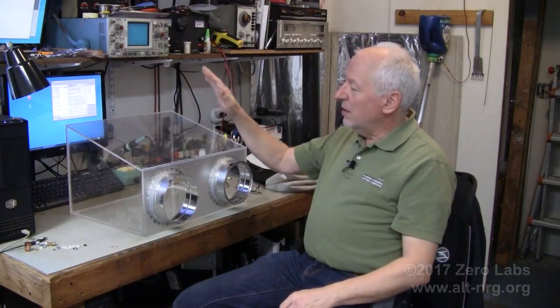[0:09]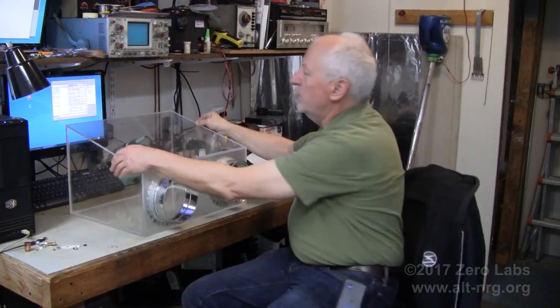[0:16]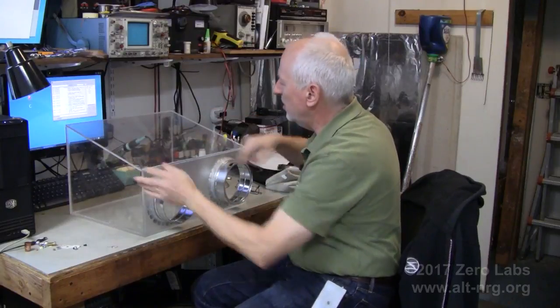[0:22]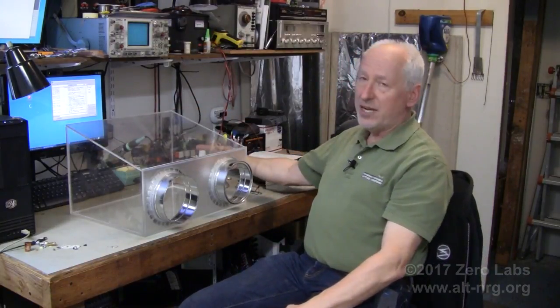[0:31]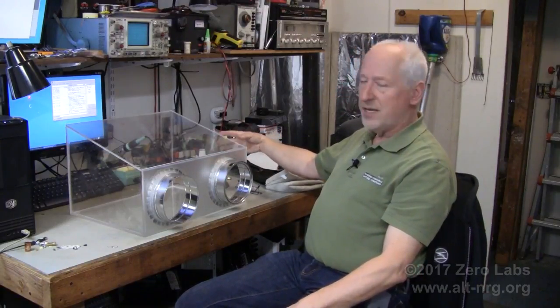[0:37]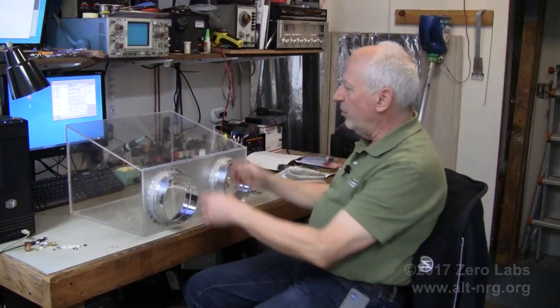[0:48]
The glove box is almost complete. All that's left really is to glue the top around the seams and cut out the access port on the top. I may also add a second access port on the side for a cylindrical sample entry where I can actually take it down with a vacuum and flood it with argon on smaller batches, so that I can introduce new samples to the glove box without having to completely purge all of the argon out of the box and start over again and waste a whole lot of argon, which is not that cheap.
So this is going to be more of a how-to video, how I went about constructing my glove box. This is by no means the definitive guide to making a glove box, but it's one way, and I want to present it to you now.
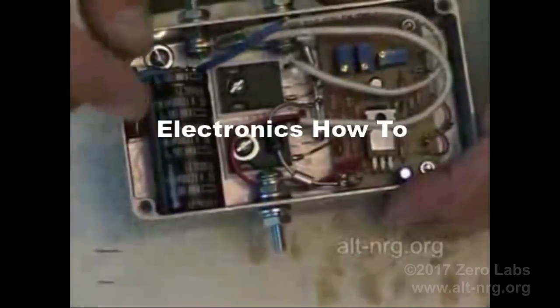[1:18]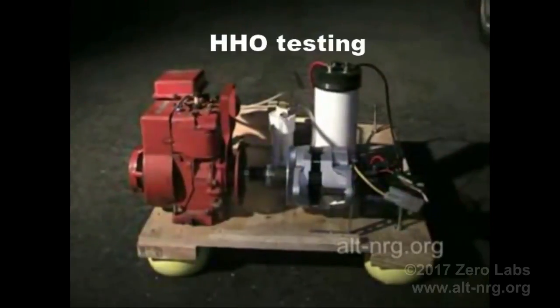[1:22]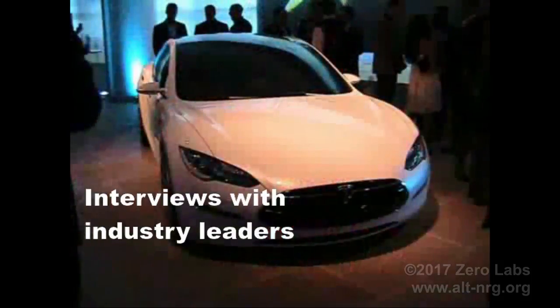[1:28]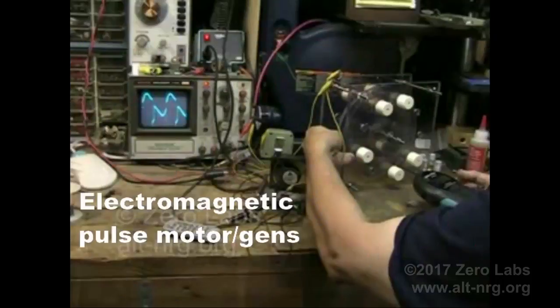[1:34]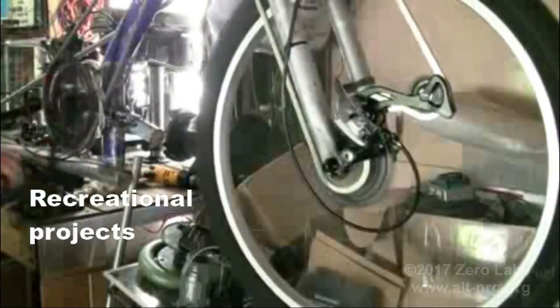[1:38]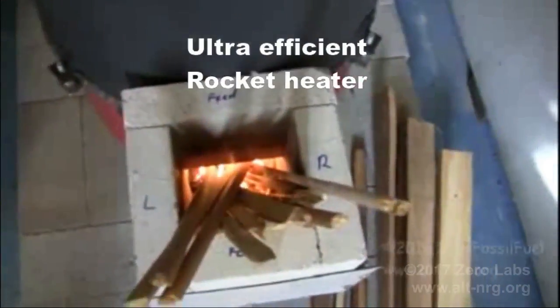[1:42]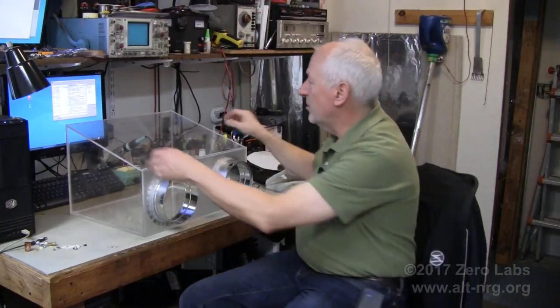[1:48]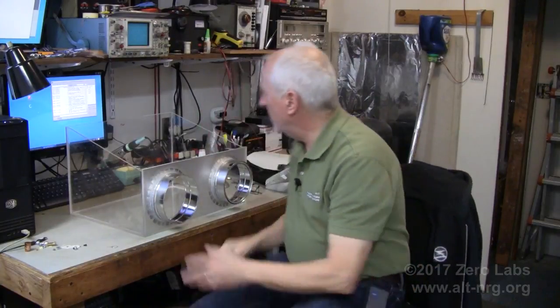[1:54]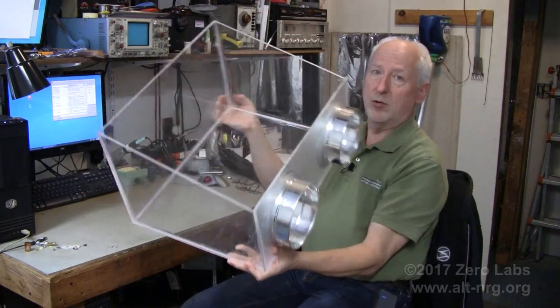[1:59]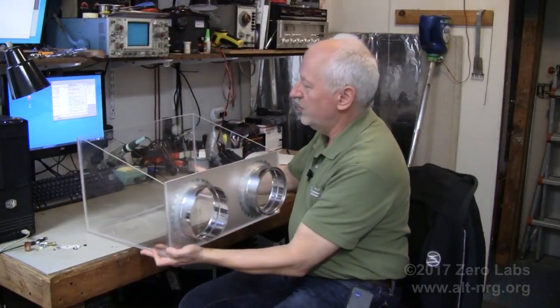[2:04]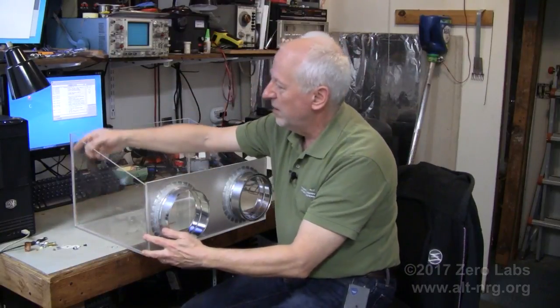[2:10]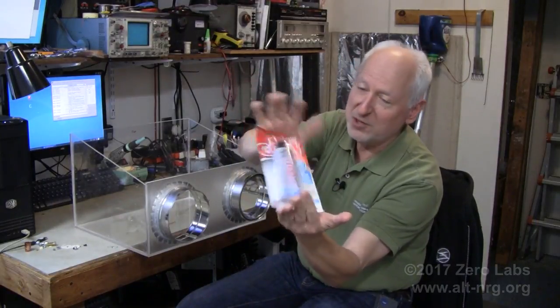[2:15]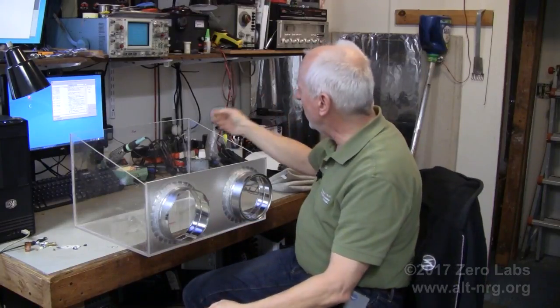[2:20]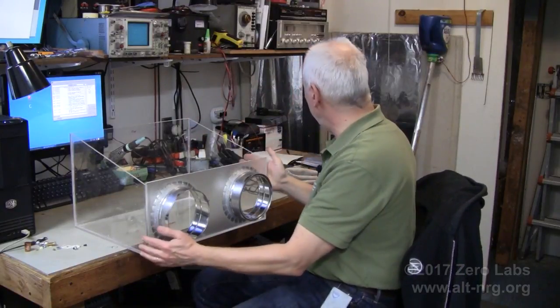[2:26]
So as I said, all that's really left now is to glue the top on. As you can see, the rest of the box holds itself together pretty well. All I've done is temporarily tape the seams around the edges and then run my bead of goop adhesive, the famous goop adhesive. It's my go-to adhesive, a very elasticized, rubberized type of adhesive to seal the corners. It's kind of like an aquarium tank.
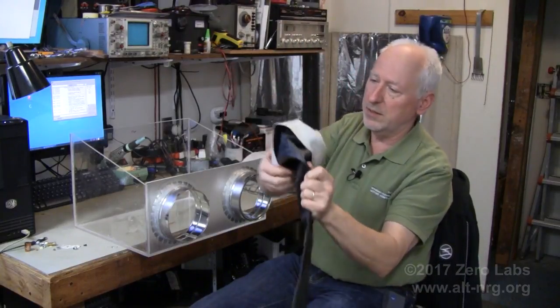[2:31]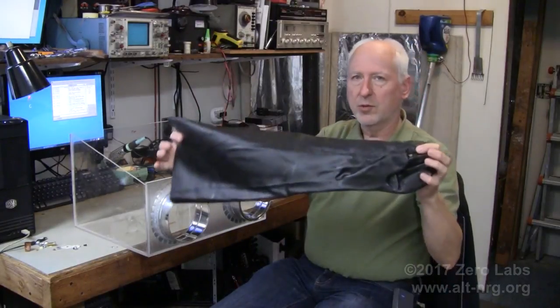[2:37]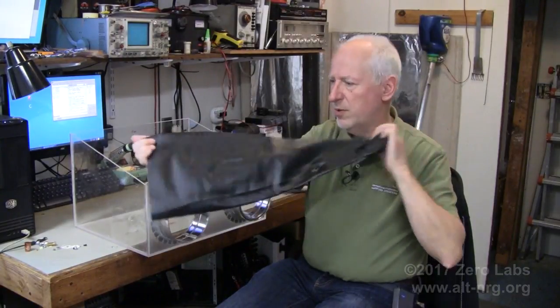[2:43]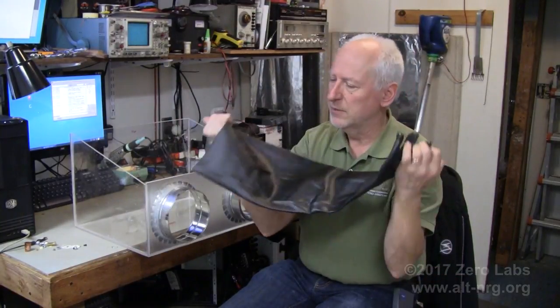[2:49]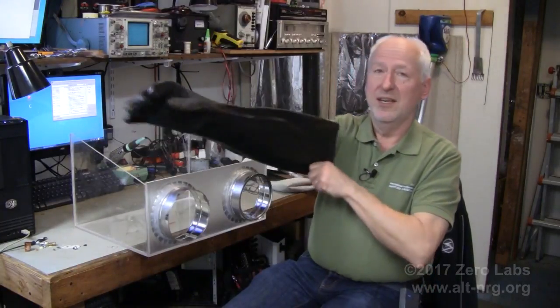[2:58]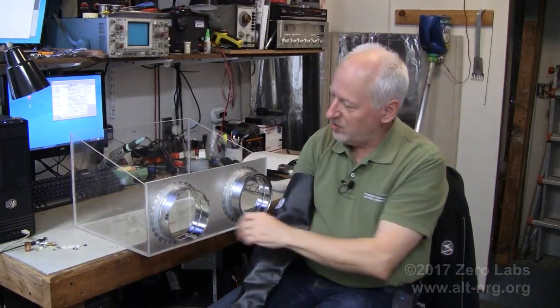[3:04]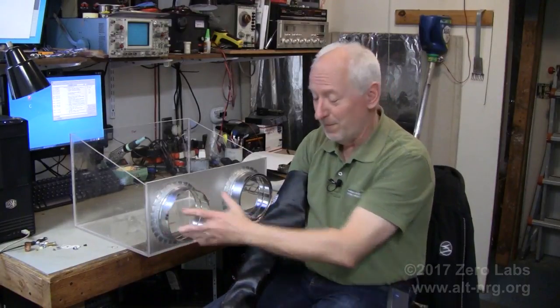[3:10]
And then I also have these 26-inch long gauntlets. These are rubberized gloves that are sold for the purpose of trapping beaver, muskrat, waterfowl, and the like. For hunting, you normally pay about $35 for a pair of these. I found a set on eBay for $18. These things are awesome, and they are the exact right size. They're insulated, full length, and the opening at the top is just the right size for the opening on the port entry for the glove box. So let's put it together.
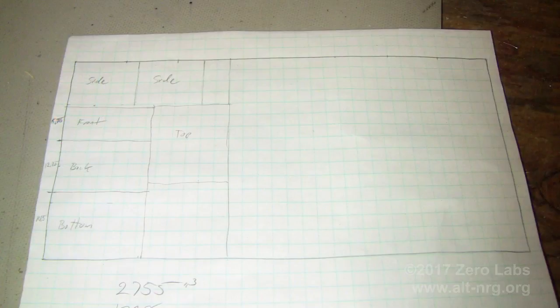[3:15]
The first step in the process, of course, is to decide how big your box is going to be, and then you need to calculate the size of the pieces that you want to cut from the master sheet of plexiglass that you have on hand. Fortunately, I was able to salvage a couple of full 4x8 foot sheets of plexiglass from a studio remodel at our television studio that was being thrown away, so I got quite a bit of plexiglass to work with, which was kind of nice.
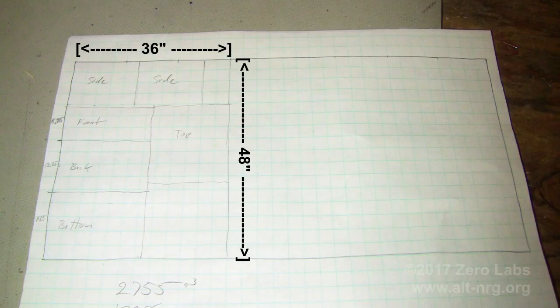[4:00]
So you can see from this diagram that I've laid out my pieces in such a way as to minimize the amount of waste. The total amount of plexiglass that I ended up using for this project is the 4 foot width of the raw piece and 36 inches. So the piece that I cut out of the 4x8 sheet is 4 feet by 3 feet.
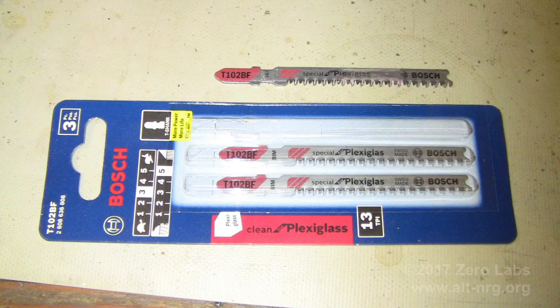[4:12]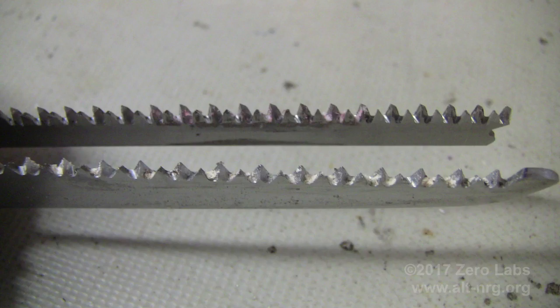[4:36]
Next, we actually need to cut the pieces. To do this, I purchased some specialty purpose blades exactly for the job, as suggested to me by one of my nerd herd, and these blades worked out remarkably well. These were purchased at Home Depot for I think about $6 for the set of three, and in this close-up picture you can see that the blade very closely resembles another blade that I recognized right away: the lower blade is the saw blade of my Swiss Army knife. The way the grooves are cut through, it was just amazing how well it cut.
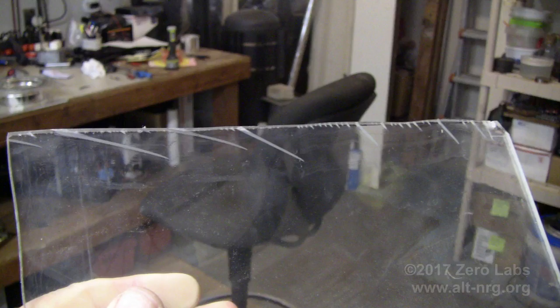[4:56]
Now, because the sheet was so large, I couldn't work with it on my bench. I actually had to lay it on the floor. But in order to give my jigsaw clearance away from the floor, I had to put some 2x4s on edge underneath the 4x8 sheet of plexiglass in order to make the cut.
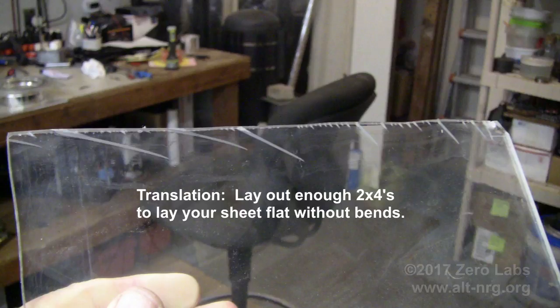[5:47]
This picture here shows the result of my first cut with just one 2x4 and the plexiglass sheet sort of draped over it, because it just made a bulge in the middle next to the line where I made my cut. And as I made my cut across the sheet of plexiglass, you'll see that the bend got tighter and tighter because the amount of plexiglass was thinner and thinner as I was cutting through the piece. And as the bend got tighter and tighter, you started to create these stress fractures that you see in the edge. Fortunately, this was on a waste piece of plexiglass, so I was able to cut that out and not use it.
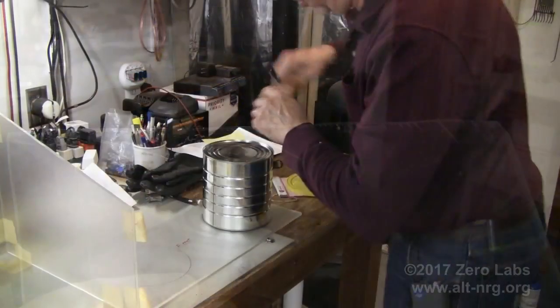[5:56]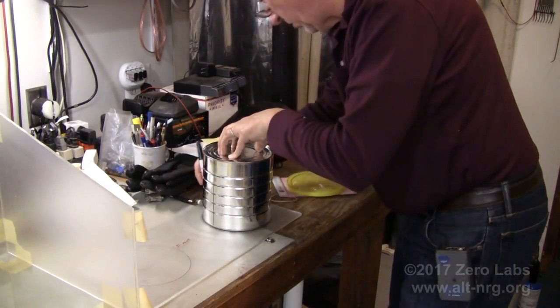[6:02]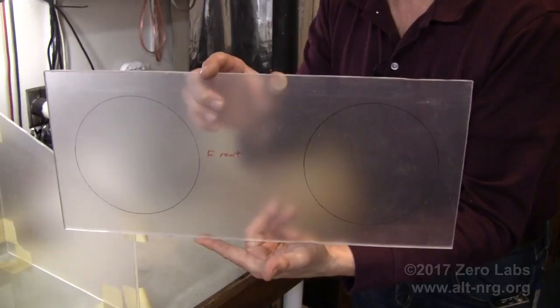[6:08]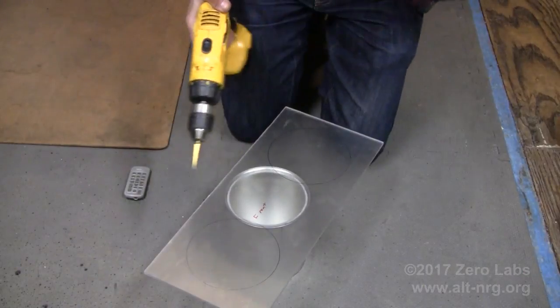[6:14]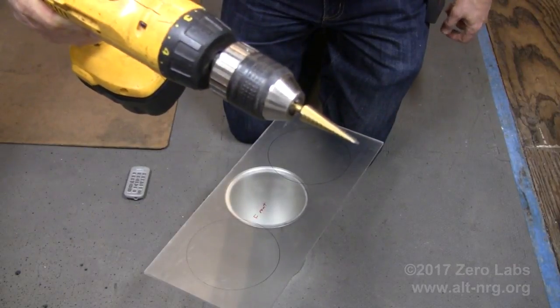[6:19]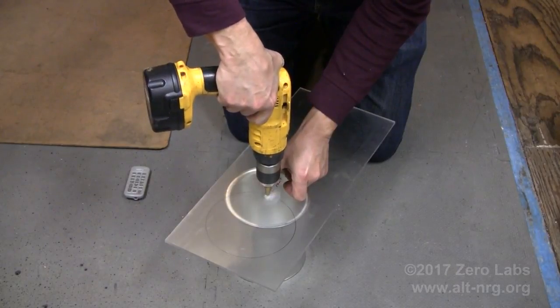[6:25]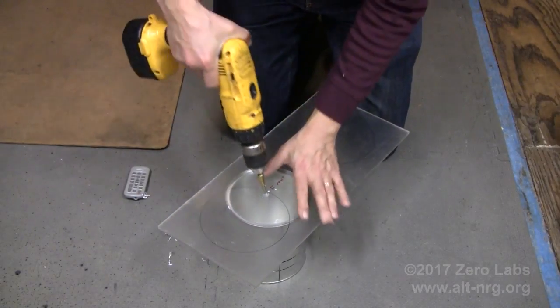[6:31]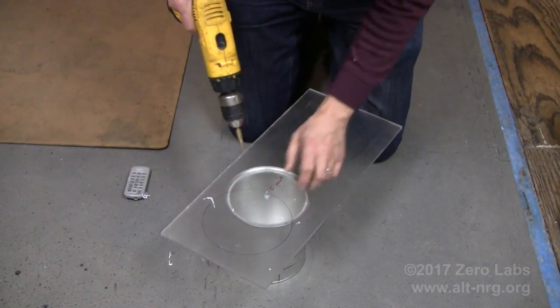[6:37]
Here I'm using the coffee can to draw the circles on the front panel where I'll be cutting the openings for the coffee can when I cut it in half to create the entry ports. The best way to make the starter holes in the front panel for the circular ports is to use this stepped drill bit. In fact, using a stepped drill bit is the best type of drill to use for any type of hole drilling in plexiglass. It makes a very clean hole so that you can insert the blade for the jigsaw and then start and finish your cut at the edge of that hole that you've drilled in the plexiglass.
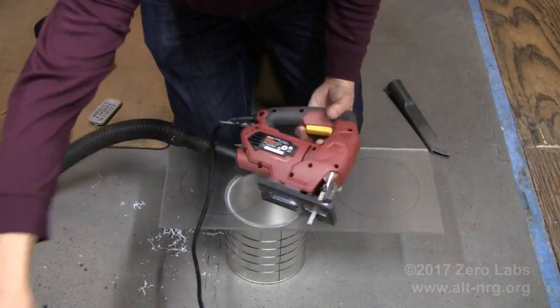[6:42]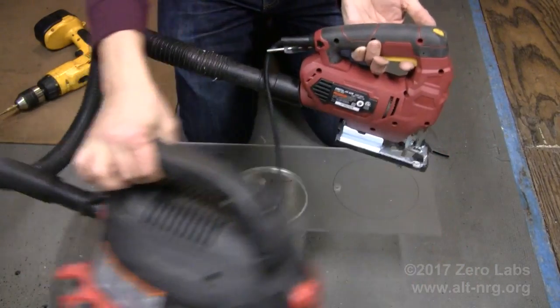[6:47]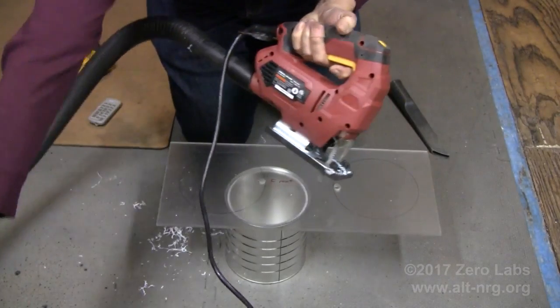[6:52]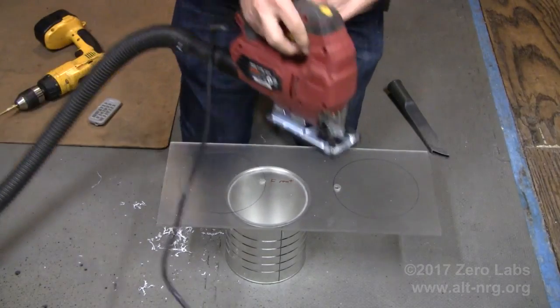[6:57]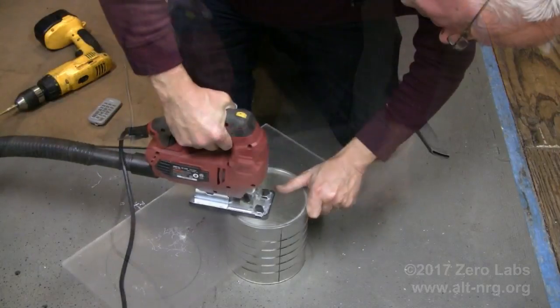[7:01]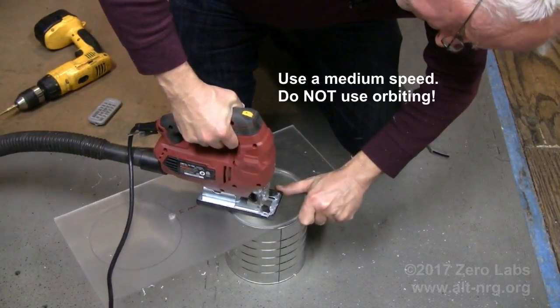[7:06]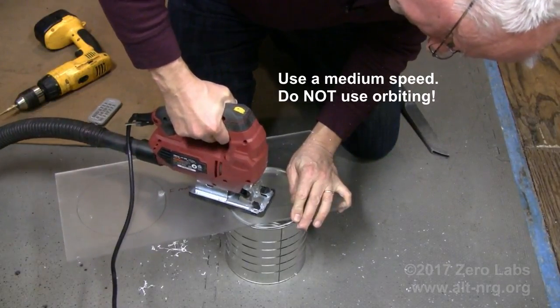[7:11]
Next, I cut the holes for the port entries. To do that, I've attached my little portable wet dry vac, and the wet dry vac attaches to the saber saw, blowing out rather than sucking in. I found that sucking in did not retrieve the large chips of plexiglass that came off the blade, and blowing out against the blade also helps to keep the blade cool when you're making the cuts going around the circle.
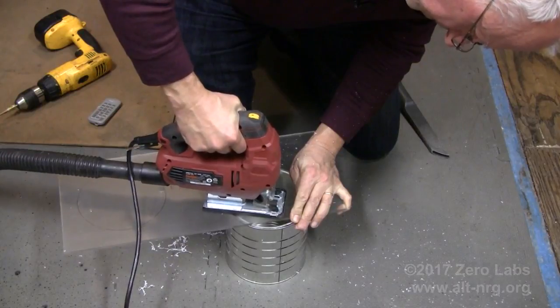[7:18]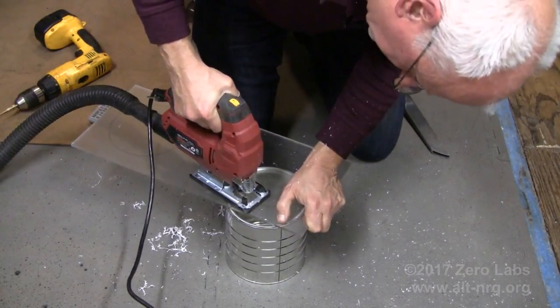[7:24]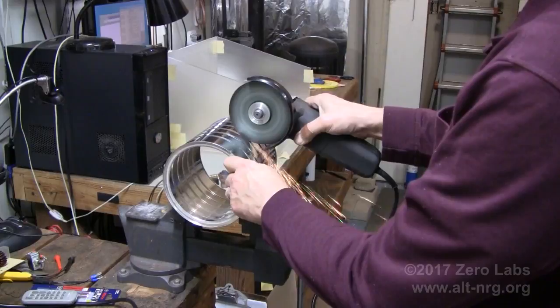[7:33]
The blade also tends to get hotter when you're trying to make a corner, because of the friction of the blade against the side of the opening as you're going around. A straight cut normally creates a channel that's just a little bit wider than the blade, so you don't get as much friction. To split the coffee can in two sections, I'm using a cutting wheel in my angle grinder
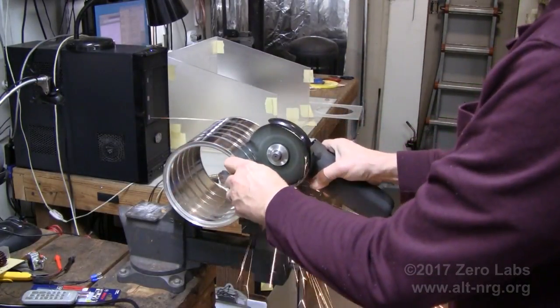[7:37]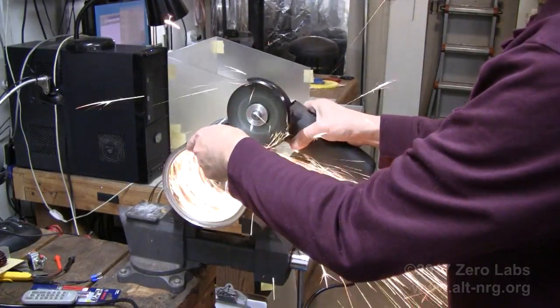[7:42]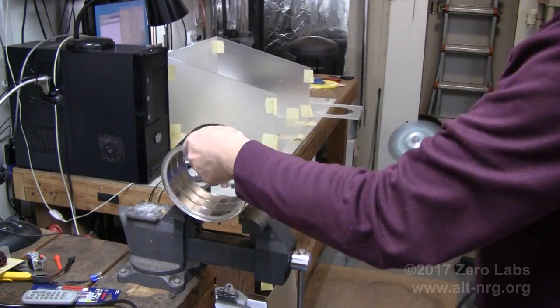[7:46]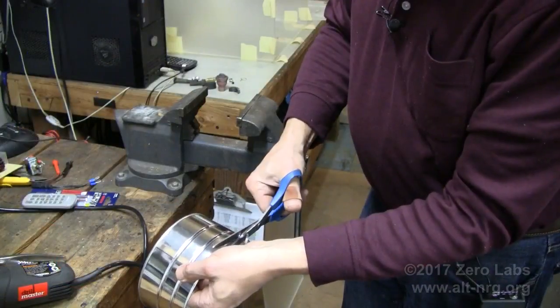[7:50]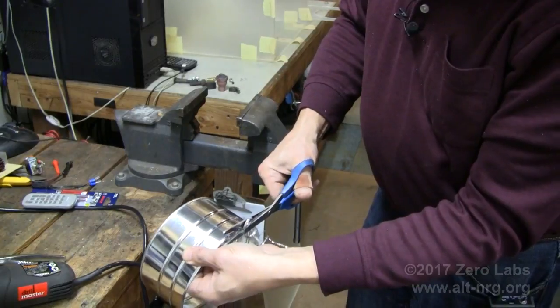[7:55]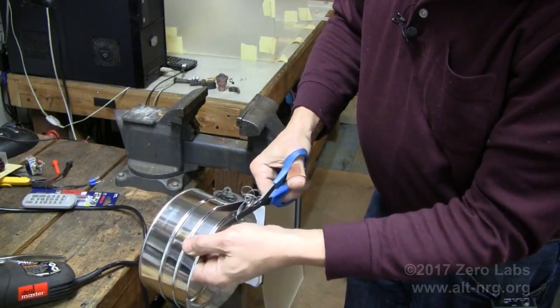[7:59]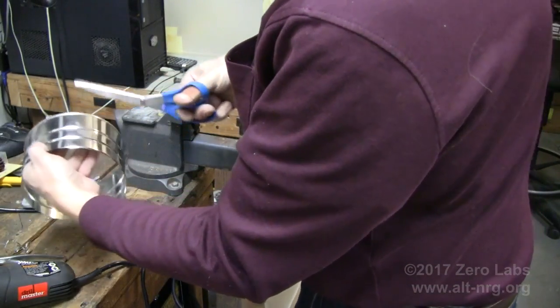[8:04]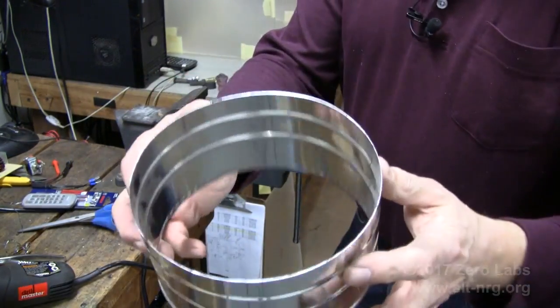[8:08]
and support it in the bench vise almost wide open so that it doesn't roll around as I'm making the cut. Once the cut is complete and I have the two pieces, I simply trim the edges to get rid of all of the sharp burrs. I tried using tin snips, but I found that it's just easier to use a pair of regular scissors, because the gauge of the metal is so thin that it just cuts like butter with the scissors and produces a very, very clean edge.
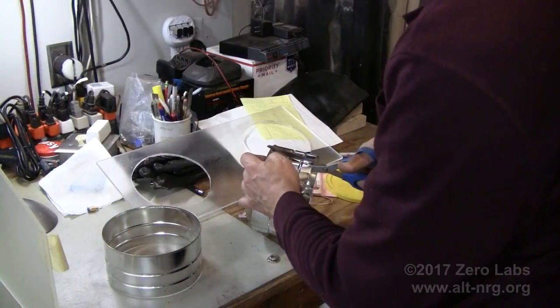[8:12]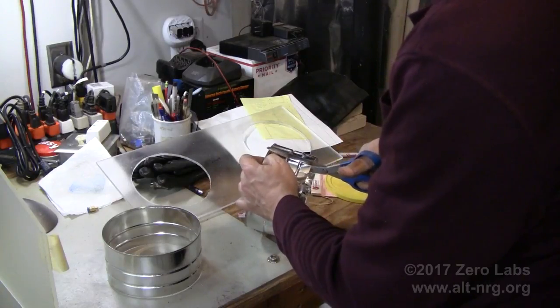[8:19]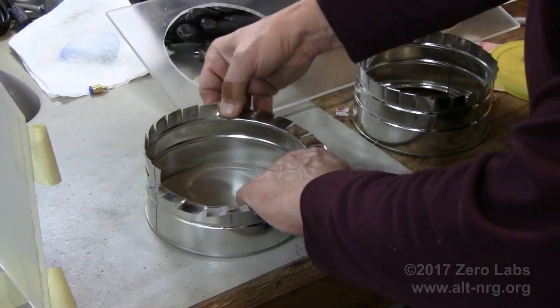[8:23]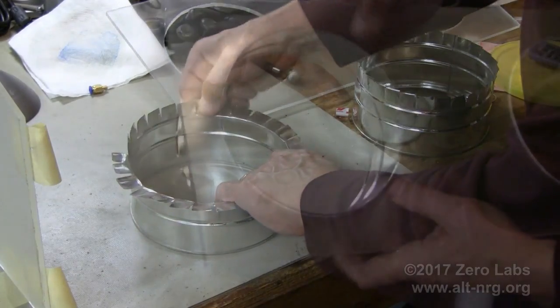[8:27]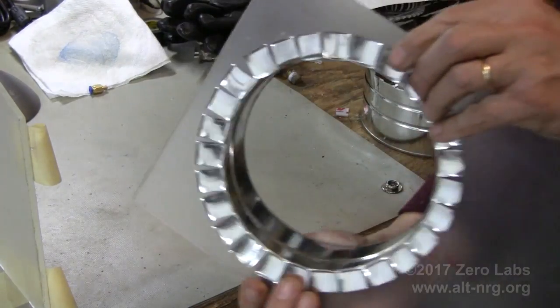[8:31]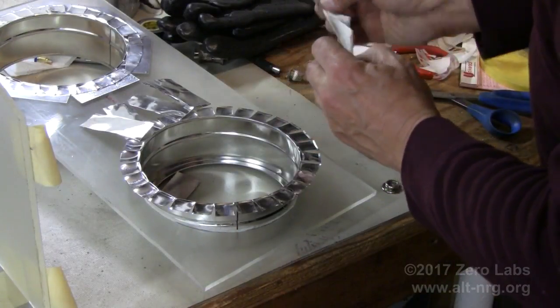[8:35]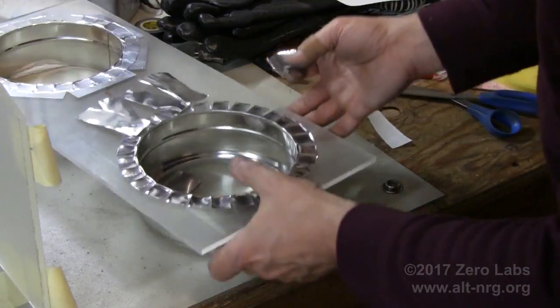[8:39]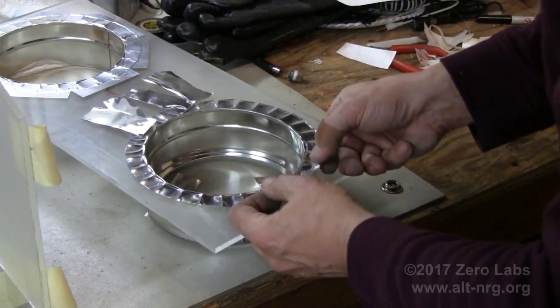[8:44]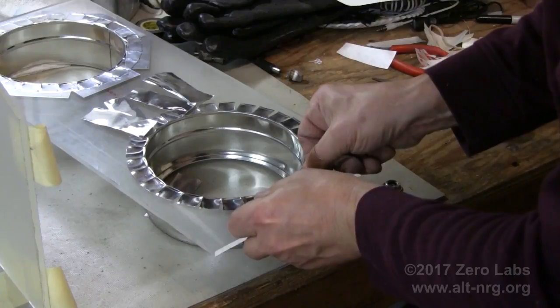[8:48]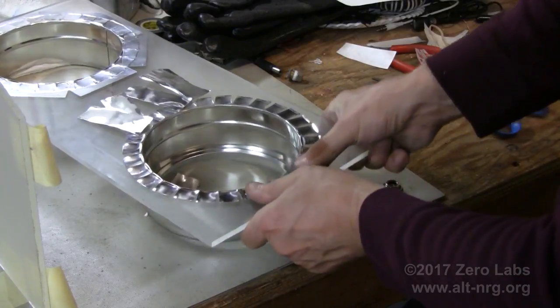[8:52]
Next, I cut 3/4-inch wide tabs in the sharp edge of the two ports and bend them over so that I can insert them through the port openings that I cut in the front plate, and it rests nicely and gives me something to secure to the back side of the front plate. Then I tape the tabs to the back side of the panel using this aluminum tape. I actually overdid it, because in the end I ended up taking the aluminum tape off again and just smearing more of the adhesive sealant all the way around the edge where the tabs are on the back, as well as the corner at the front.
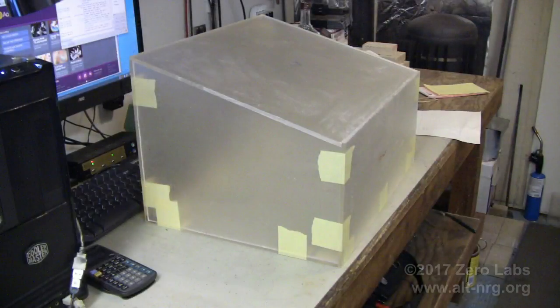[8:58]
In this picture here, you can see how I've test fit all of my pieces together simply by assembling them at the corners with some 2-inch wide masking tape. And then I've sanded the edges and just got everything perfect before I went on to the next step.
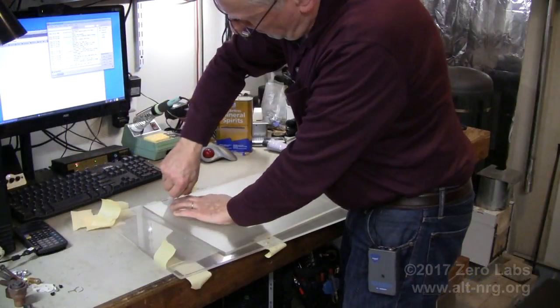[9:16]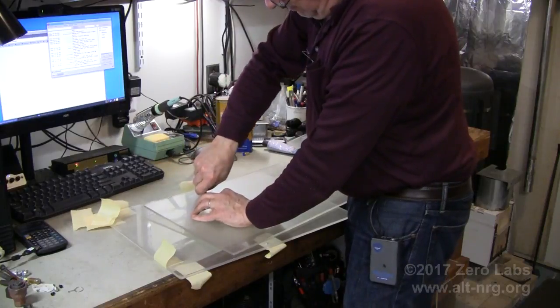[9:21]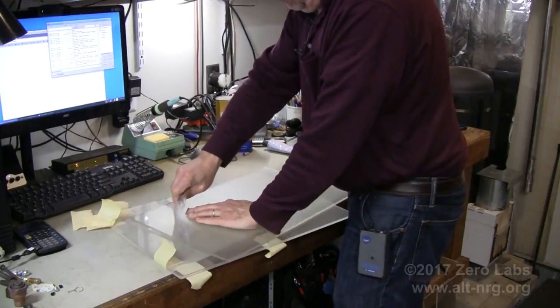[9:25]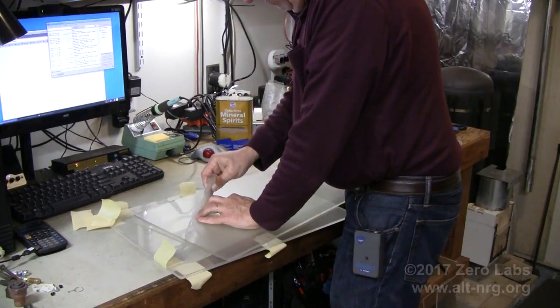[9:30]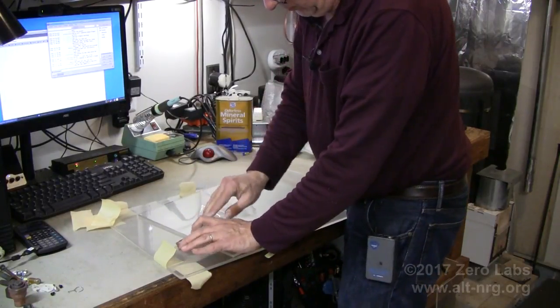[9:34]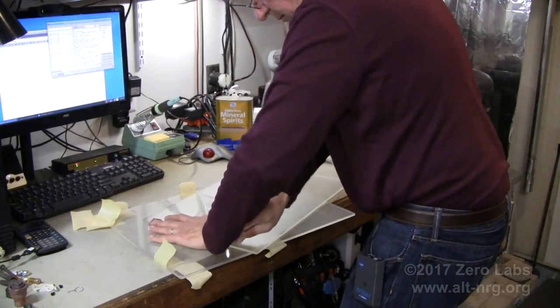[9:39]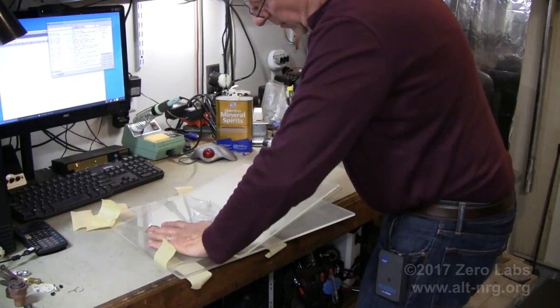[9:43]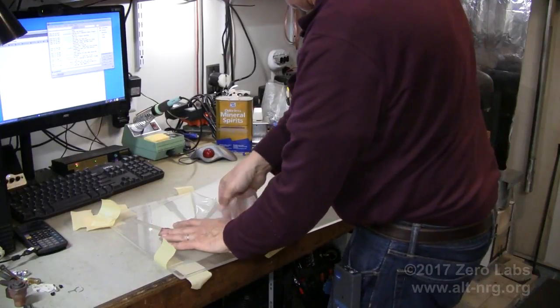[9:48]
Here I'm removing one of the protective film layers that is affixed to the plexiglass. These plexiglass panels had, let me see, 1, 2, 3, 4 layers of protective film. And one of them was smoke colored, the other was clear, and then on the other side there were 2 clear layers. Some of them did not come apart very, very easily, and
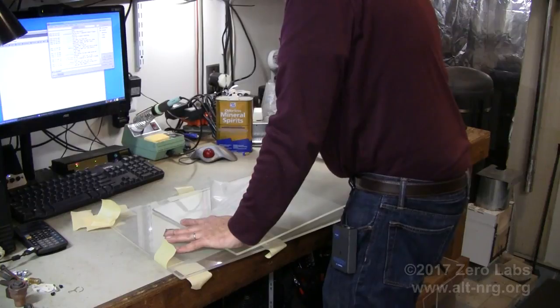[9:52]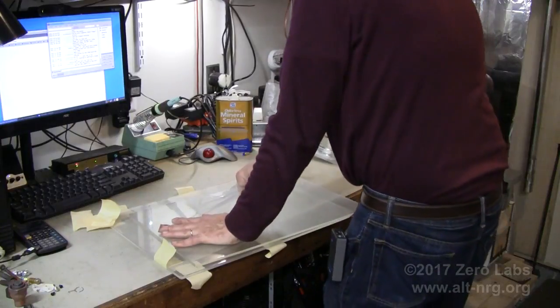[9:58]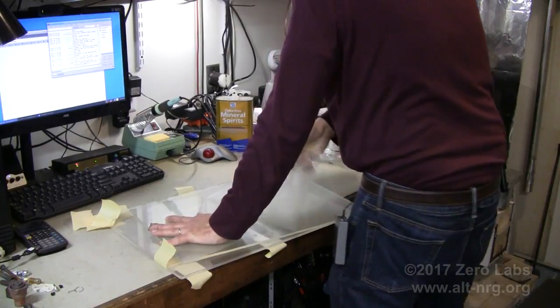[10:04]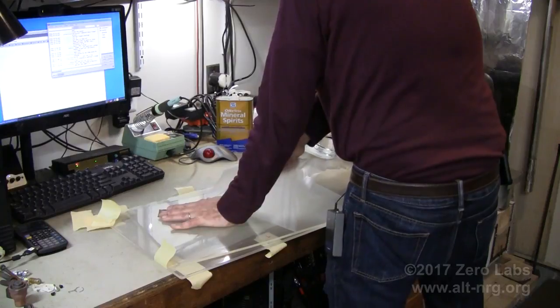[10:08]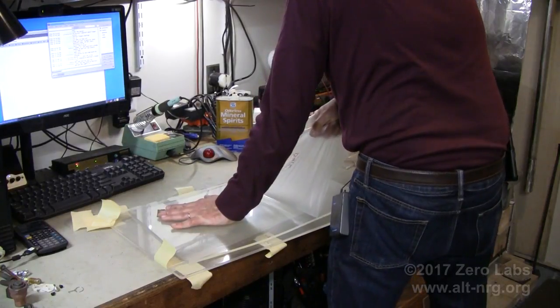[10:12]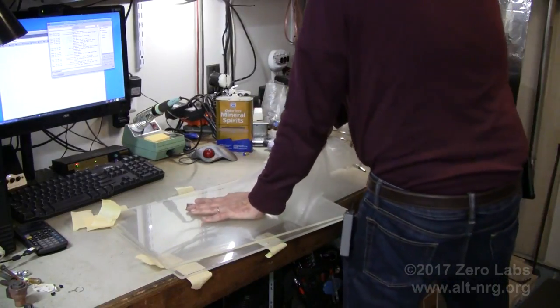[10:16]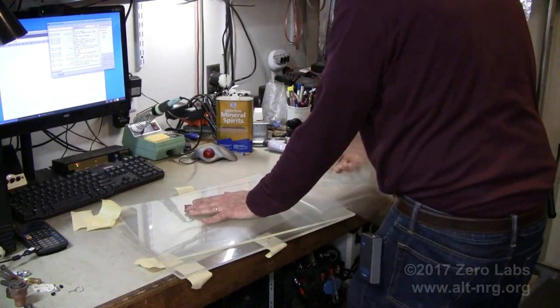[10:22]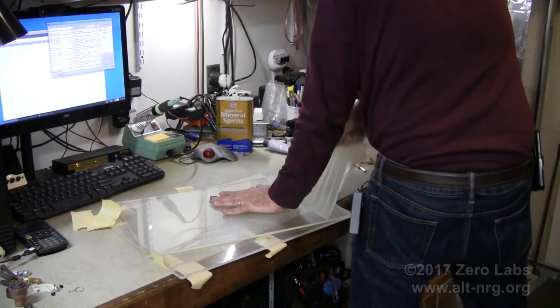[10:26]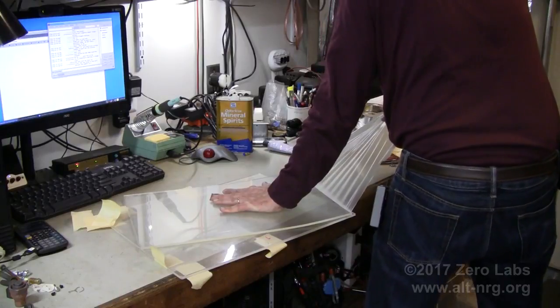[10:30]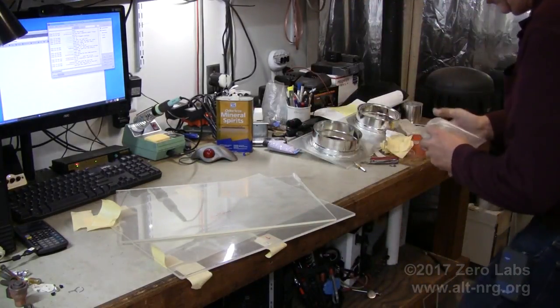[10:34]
left an adhesive residue behind that I first tried to remove with chemical solvent like Goo Gone or mineral spirits. That was a bad idea. All it did really was smear it and made it even more difficult. In the end, I ended up using the 2-inch wide masking tape and just sticking it back down to the adhesive that was left behind, and using it like those strips that women use when they're waxing. You apply it down and you just tear it off, and it just pulls everything that's underneath with it. You do that a few times to the adhesive against the plexiglass, and it comes very, very clean. It really does work very well.
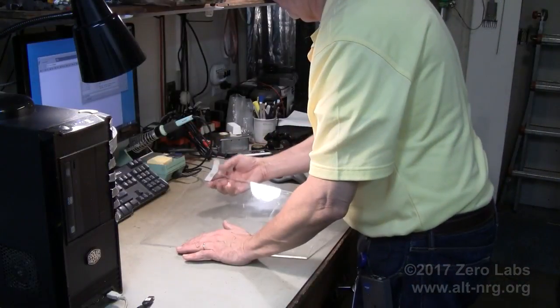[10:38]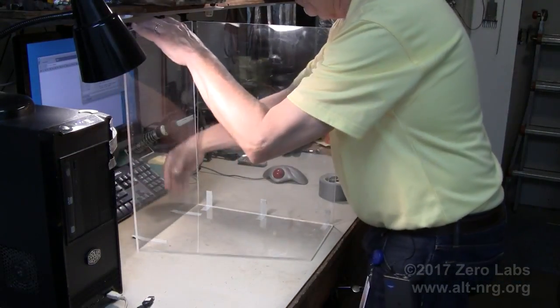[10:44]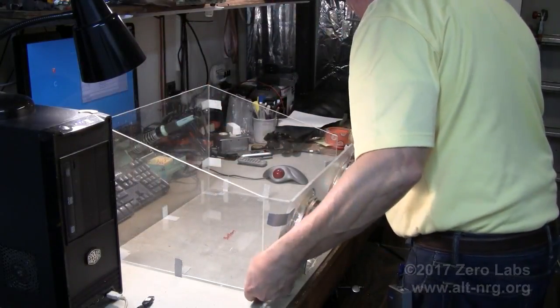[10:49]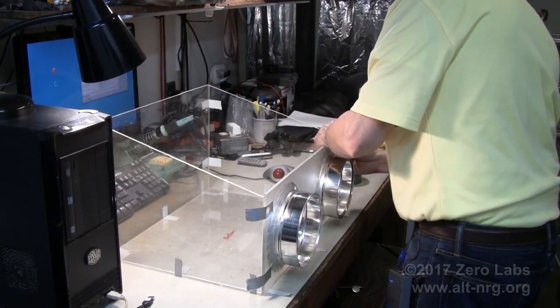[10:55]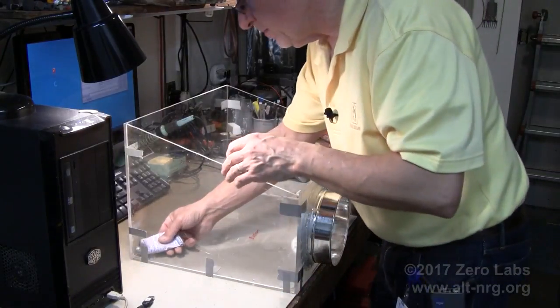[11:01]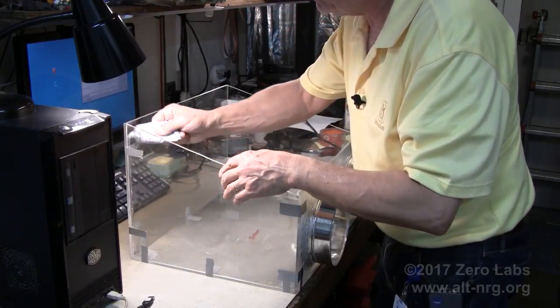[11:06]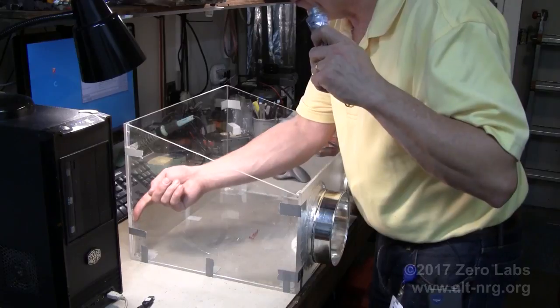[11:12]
And now we're ready to put it all together and glue the inside seams. I actually ran out of masking tape, so I ended up using duct tape and tearing off little strips of the duct tape to put the panels together in this picture, and then put the glue, the Goop adhesive, all the way around the inside edges, just smeared with my index fingers to create the seal as well as to bond the corners together. That also worked very, very well. So that's about it for the glove box.
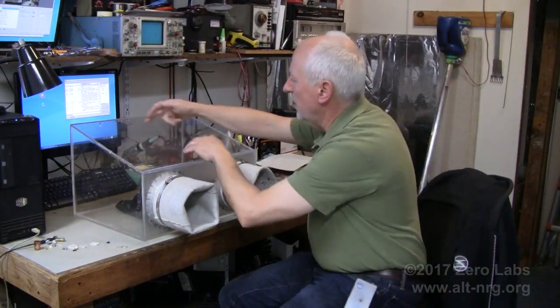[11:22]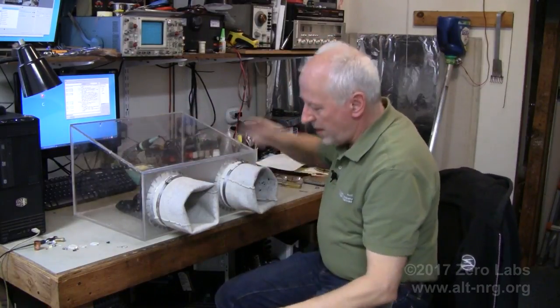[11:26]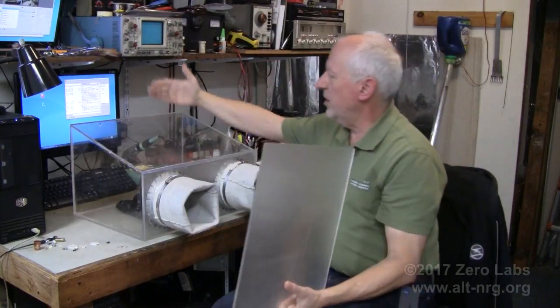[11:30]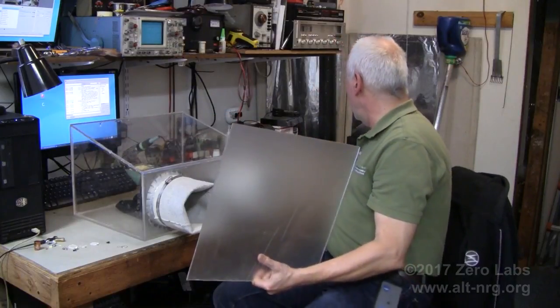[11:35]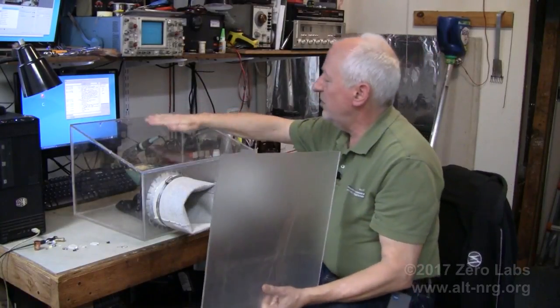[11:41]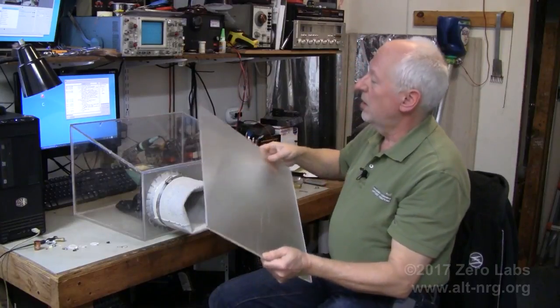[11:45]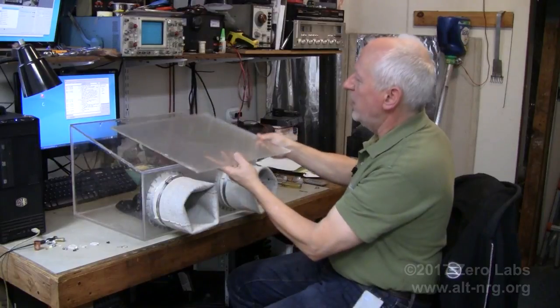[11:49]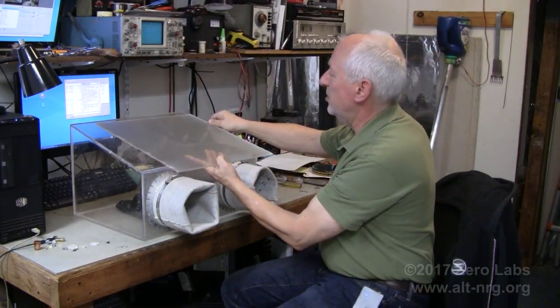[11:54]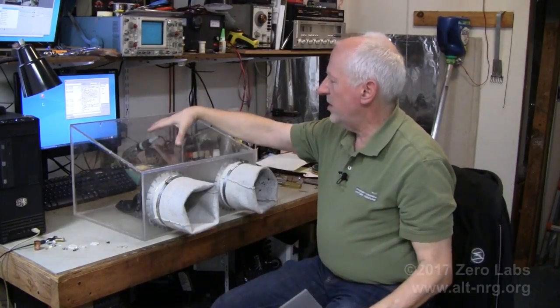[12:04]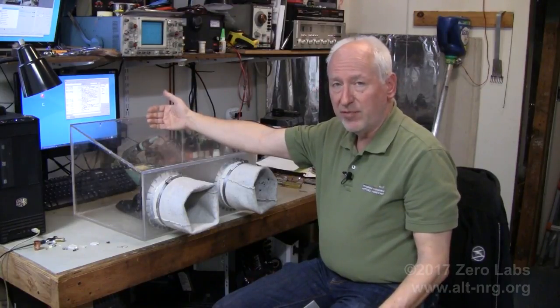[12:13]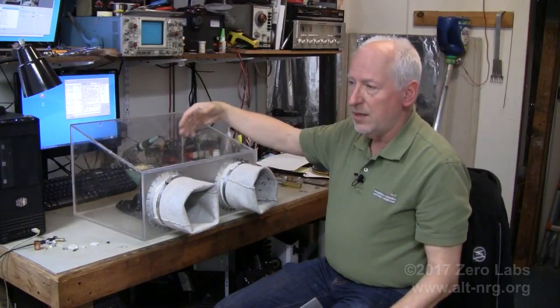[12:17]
As I stated earlier, all that's left is to cut a rectangular access port on the top, build a hinged lid for it that is sealed with gasket material that I picked up at Home Depot today. It will probably secure with some thumb screws or some wing nuts and screws. And I will be cutting it out of this leftover piece of plexiglass or Lexan or whatever this material is. It's heavier than plexiglass, so I think it's Lexan. But anyway, I'll be cutting a section of this out for access in the top, and I'll also be making a removable panel for the back of the glove box so that I can affix different heating coil fixtures to the box, and then try different arrangements that way too. Well, it should be a very flexible arrangement.
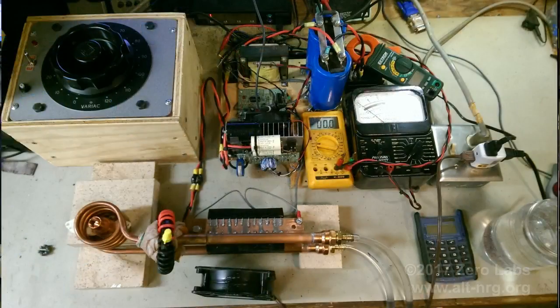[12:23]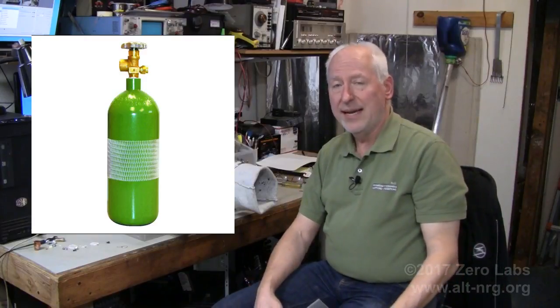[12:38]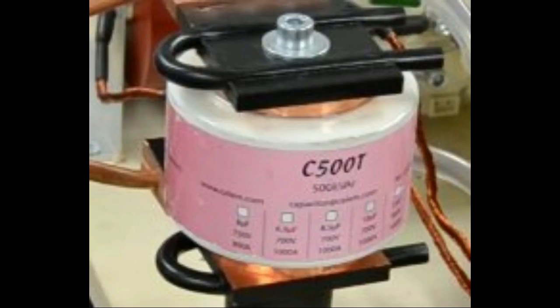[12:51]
The next phase, of course, is to integrate the glove box with the induction heater and start making some alloy. I'm looking into the pricing of argon tanks and the argon gas. Not cheap. Hopefully I can get away with the 1500 watts. If not, I'll also have to dig pretty deep for that specialty capacitor that I need for the tank circuit. I hope I don't have to go there.